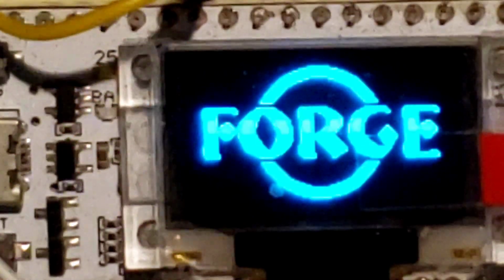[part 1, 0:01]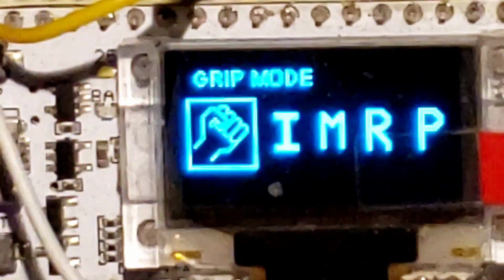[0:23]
Hi, so I thought I'd give you an idea of how my GUI is set up for my prosthetic hand project. So this is the main home screen. And then say if you wanted to go into the grip mode, to where you'd have individual control of which fingers are locked or unlocked, then you hit the menu button that puts you in grip mode.
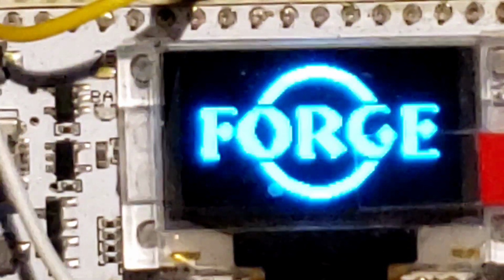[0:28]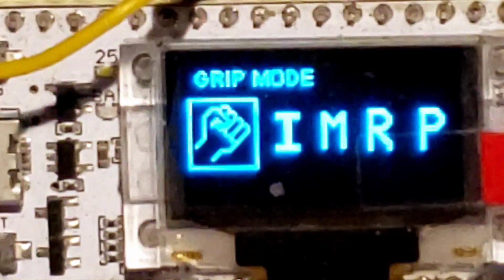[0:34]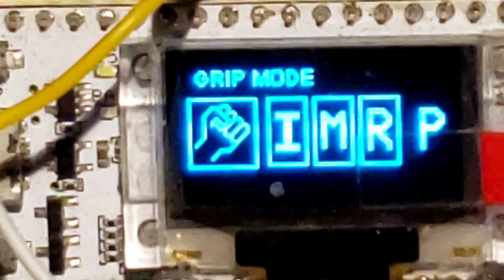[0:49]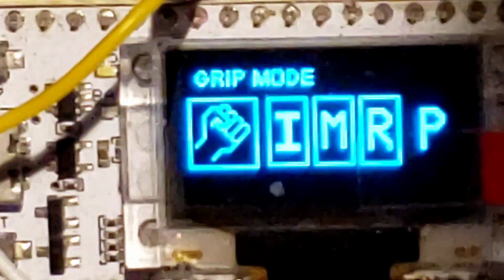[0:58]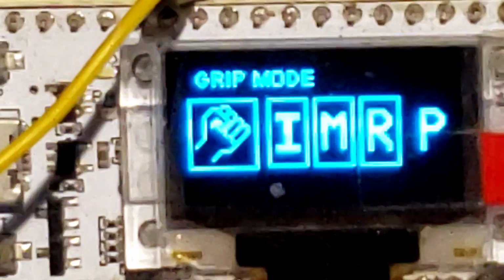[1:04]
Let's go back to grip mode. And then with each one of the myoamplifiers, you would either lock or unlock the index, middle, ring, and then the palm. Anytime one of them is activated, signal high, then it would be the inverse graphic. So, say for instance, the icon would be black, but the background would be white to show that it was in active mode. And then from there, we go to accessories.
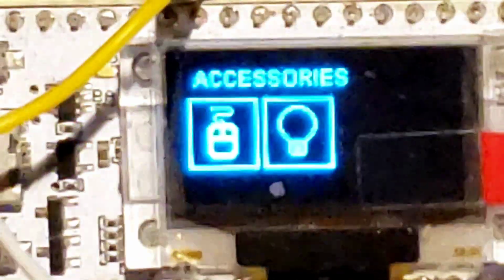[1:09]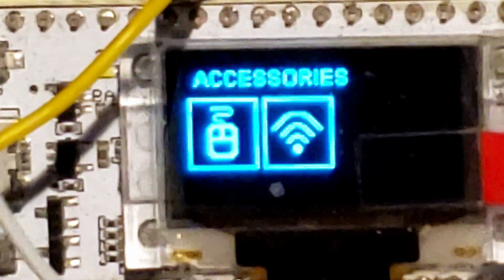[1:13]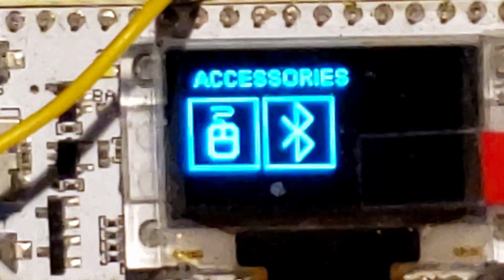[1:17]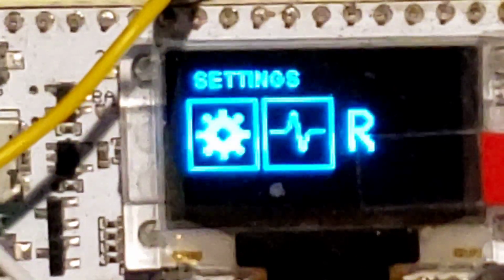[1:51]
So right now this is showing the flashlight, and then that'd be for your Wi-Fi, and then Bluetooth. Because I've come up with a smart relay switch, you'd be able to plug in a grinder or some other hand tool, to where you'd lock the hand down into a grip position, to where you really have a hold of the thing. And then by giving a closed input with the myoamplifier that's on the palm side on the pinky, like you would be grasping something, then it would turn the device on. And when you no longer give it that input, then it would turn off.
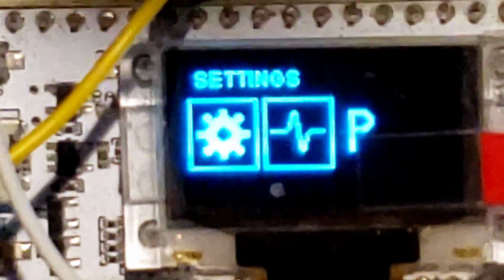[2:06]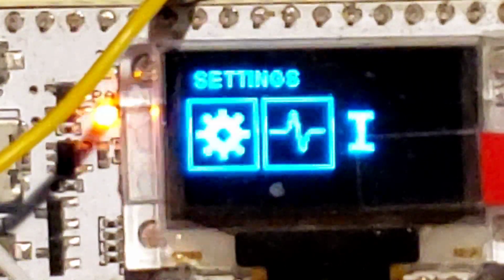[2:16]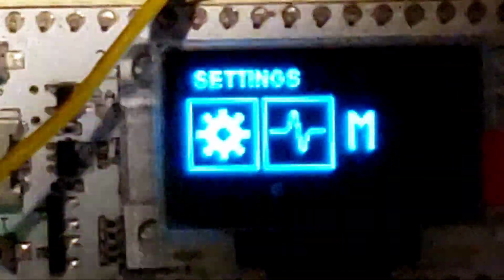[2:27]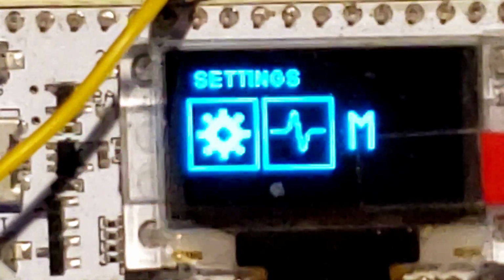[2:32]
So on the settings mode, which is the next mode, you can adjust the threshold on the Myo. This is the Myo interface, and so you can adjust each one of the thresholds without having to hook it up to a computer. Say it's a day that maybe you're sweating more, so you have a higher conductivity, and the device is giving you a lot of false positives. Then you can just go into this settings mode and set a higher threshold to where it isn't giving these false positives.
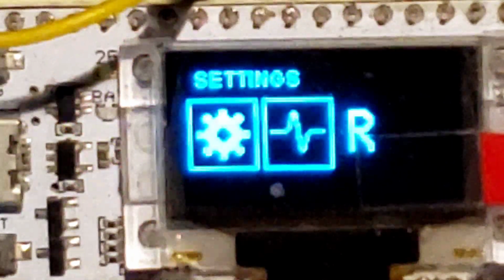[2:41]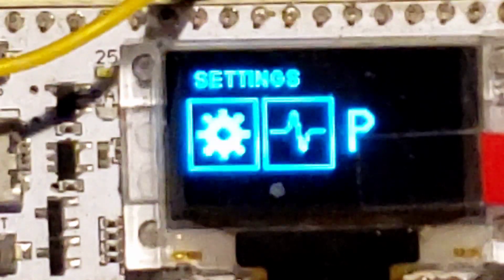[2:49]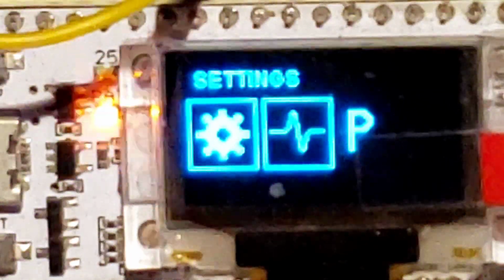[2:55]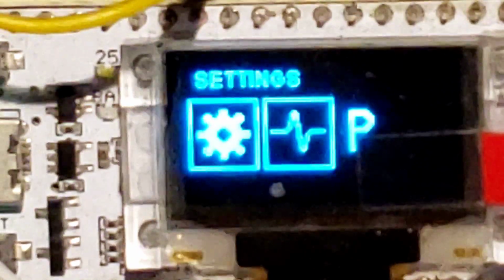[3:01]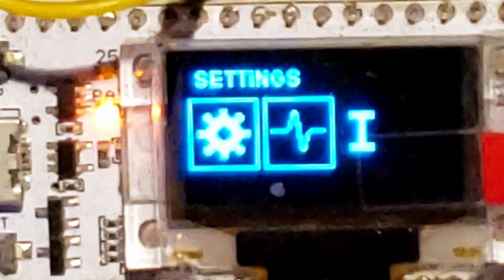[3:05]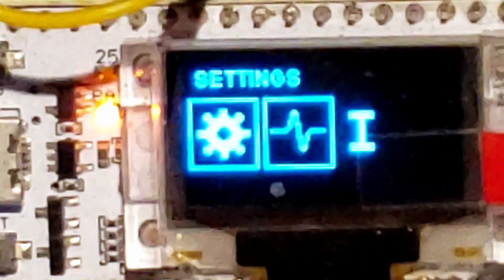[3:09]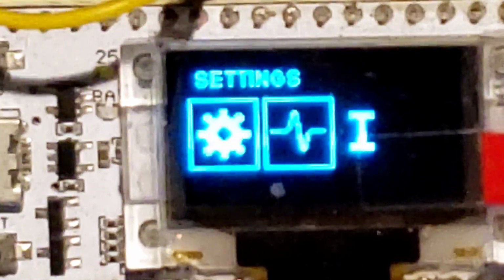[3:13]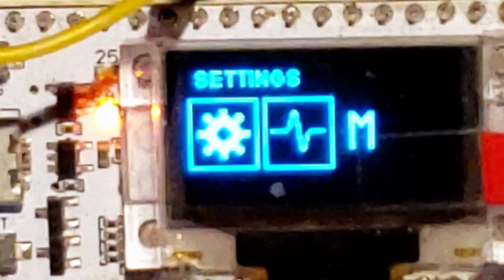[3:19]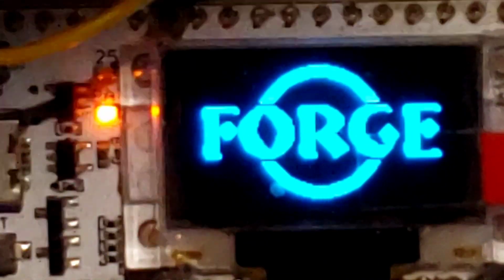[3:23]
And then the same thing for Bluetooth and Wi-Fi on this settings page, but that's where I would be using the gyro. Say if you roll your wrist down, then it would go a page down, which would be for like Bluetooth or the flashlight or Wi-Fi, and then page up would be the opposite roll, a roll to the left as opposed to a roll to the right. Roll towards you would be page up, and then roll away from you would be page down. And then from there, it just goes back to the home page. So, this is how I have it set up in the ESP32.
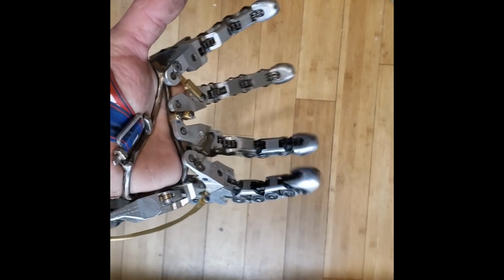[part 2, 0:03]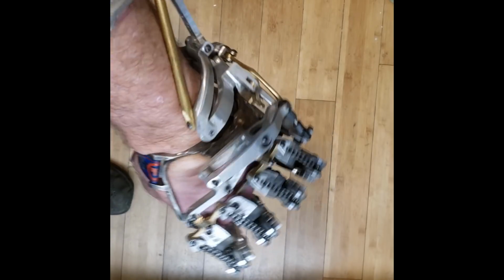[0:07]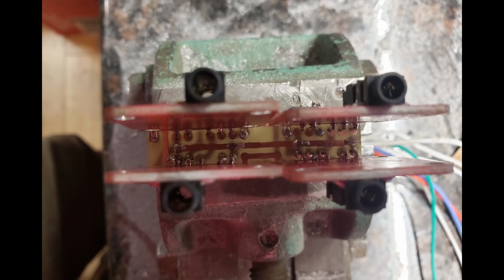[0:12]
The last short video showcased the addition of the splay function to my mechanical hand. In this video, I'll be showing how I made a daughter board to combine the inputs of four of these EMG boards into one easily wired and mounted assembly.
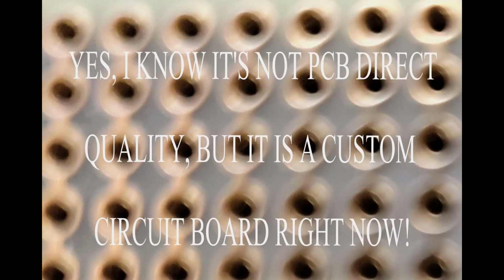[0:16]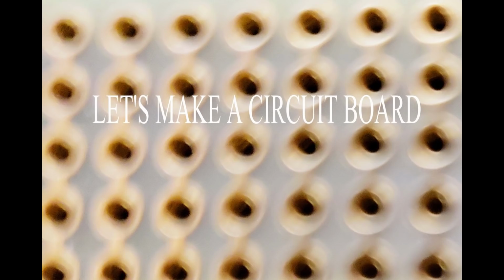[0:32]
Now yes, I know I could upload Eagle files to PCB Direct, wait a couple weeks, and receive multi-layer boards from them in the mail, but sometimes I want or need a board now. When that happens, I break out these techniques, and in a couple hours, I have a custom board ready to assemble. So let's build a circuit board.
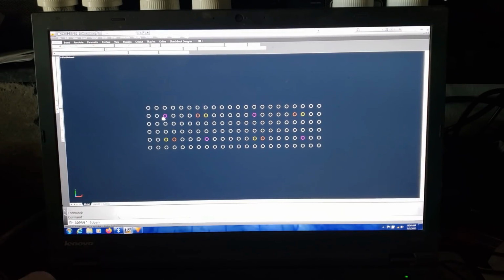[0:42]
Like so many other projects, I'll be starting this in AutoCAD with a 0.1 by 0.1 grid and laying out all the pins of the boards that I want to mount. Now I combine all of the common pins that I can, the voltage positive, the voltage negative, the voltage ground, and all of the signal grounds. The four signal output pins are broken out to solder pads.
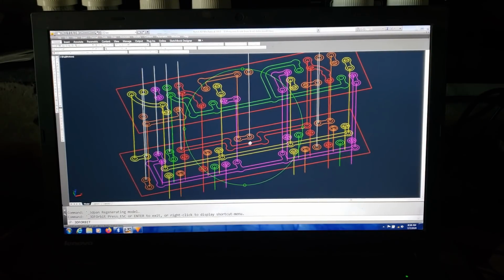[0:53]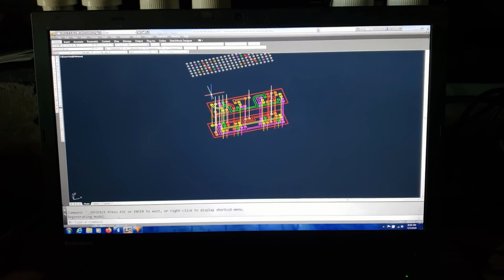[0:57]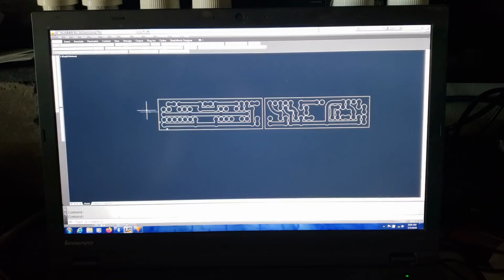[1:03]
Now that the rough layout is done, I break it into two layers with jumper points to get from one side of the board to the other. After the design for the traces is finalized, I offset everything for the kerf of the laser and get it ready for cutting. I'll be using a Cam 5 6040 100-watt CO2 laser for this portion of the project.
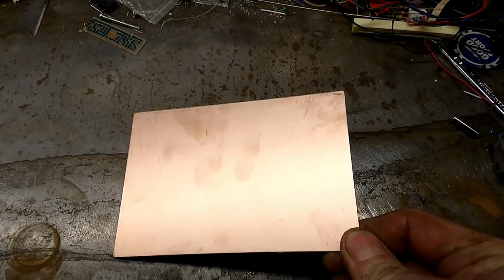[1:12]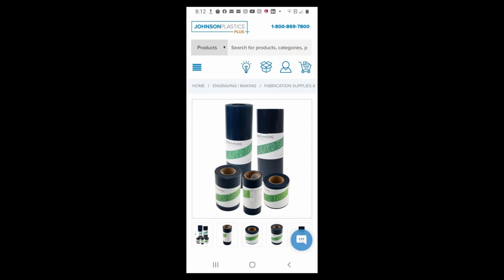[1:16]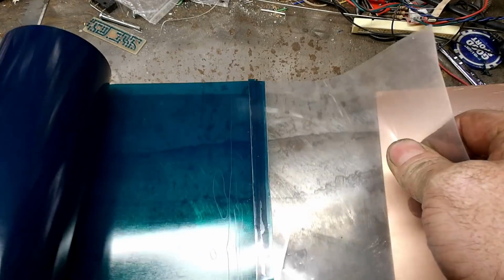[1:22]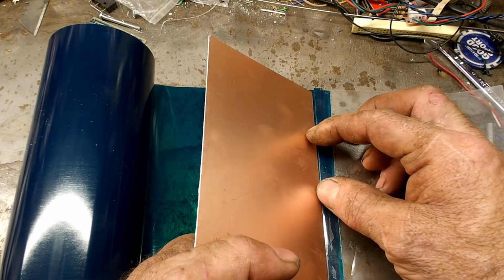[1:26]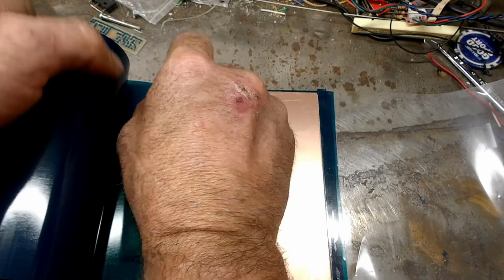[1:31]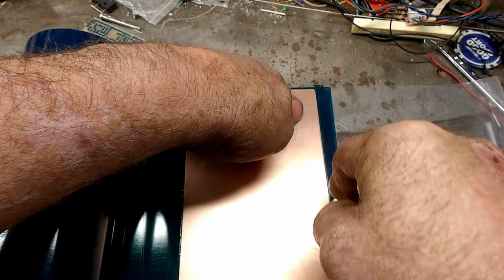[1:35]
Next, I'll prep the raw circuit board material and give it a good cleaning with isopropyl alcohol. I apply the laser masking film that I get from Johnson Plastics. No affiliation or sponsorship, just a place that stocks this product. Now roll out enough film to cover one side of the board and lay the board down on it. Next, run a razor along the edges of the board to trim the film to size. It'll stick really good, so be warned, it's a one-time deal.
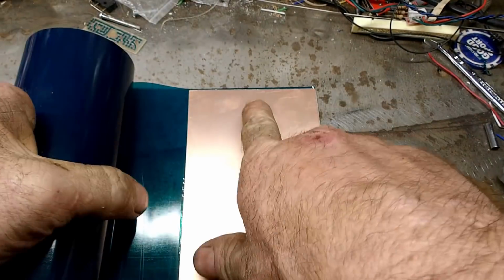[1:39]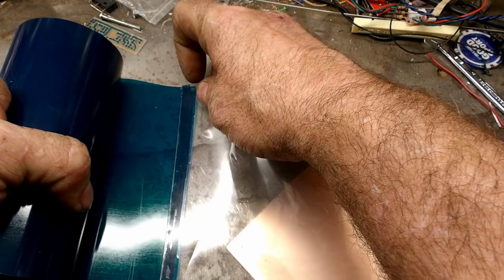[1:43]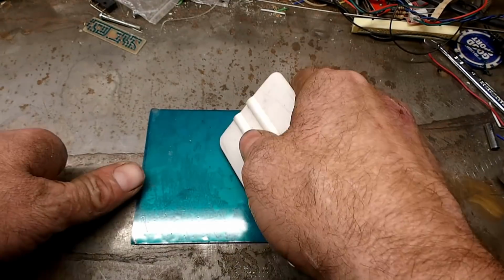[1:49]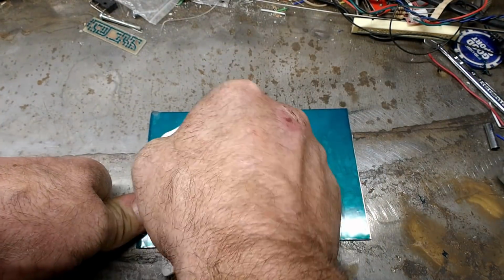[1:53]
Pro tip, there are two layers of the film, the top protective layer and the film itself. I saved the protective layer from another cut. Now I stick it to the inside of the rest of the film so you have a tail to start with the next time. Now use a squeegee to get all of the air bubbles out and really adhere the film to the board. Rinse and repeat for the other side.
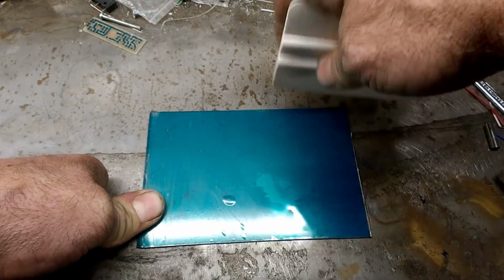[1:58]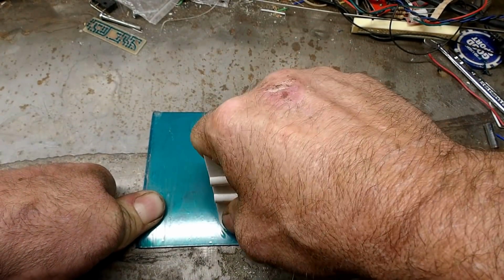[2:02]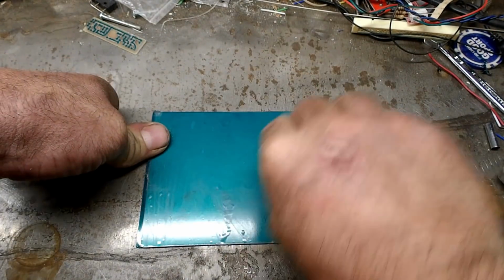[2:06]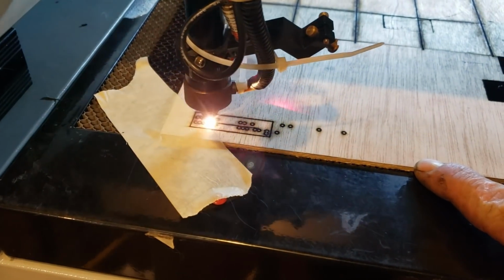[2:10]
Another tip that I found that can improve your success when working with this film is to put the prepared board in the freezer for about 2 minutes. Not really any longer than that, or the film can crack. Now while I'm waiting for the board in the freezer, I'll go and set up the laser reference.
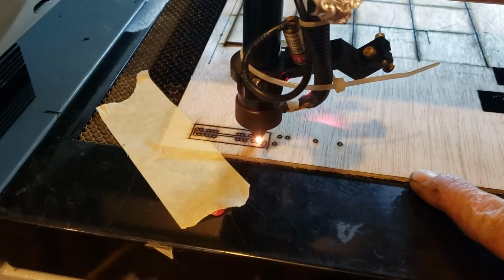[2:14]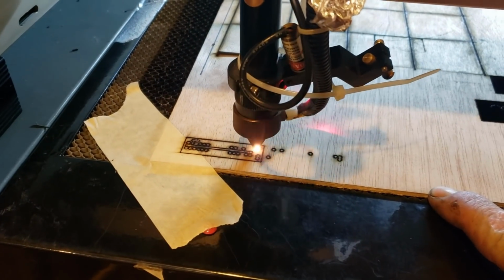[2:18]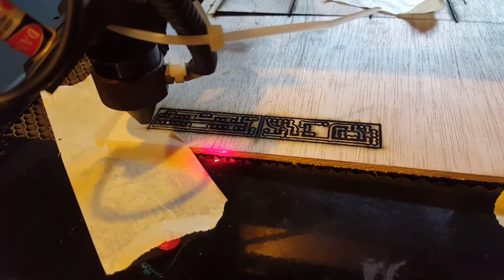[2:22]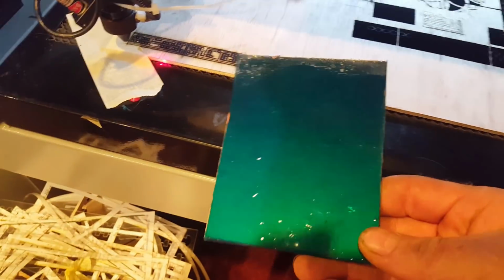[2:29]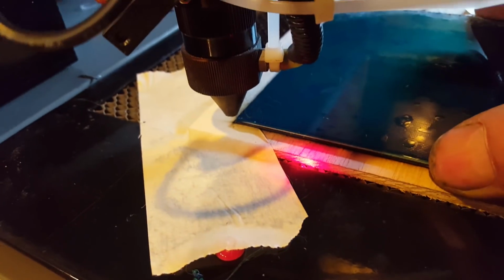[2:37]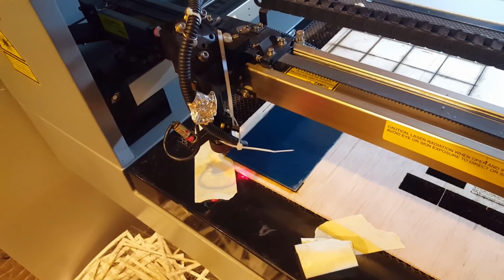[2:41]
I cut the same vector file as for the circuit boards on some plywood that I have taped down on the laser bed. This will provide a square index to align the circuit board to. This is especially useful when making two-sided boards or boards with multiple setups. Time to go get the board out of the freezer and remove the protective layer from the side that you're going to cut first. Align the circuit board with the reference marks on the plywood and use some masking tape to secure the circuit board to the plywood.
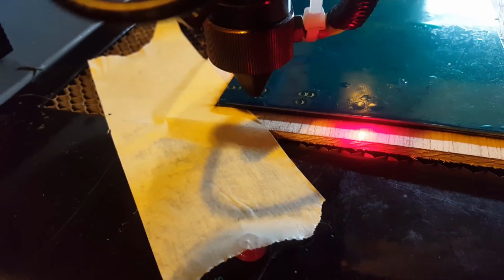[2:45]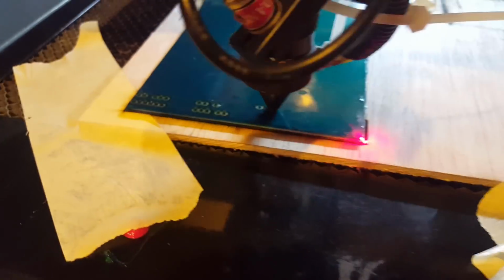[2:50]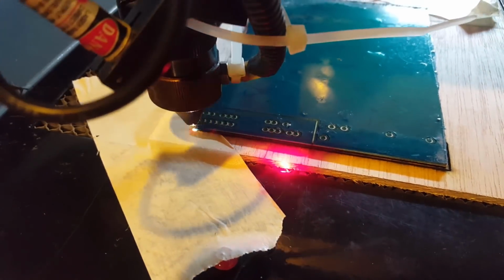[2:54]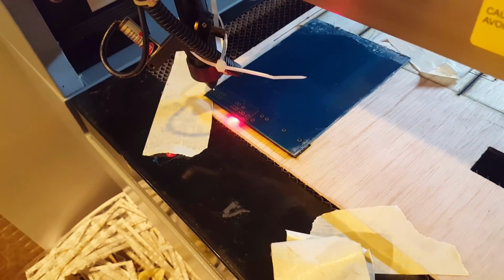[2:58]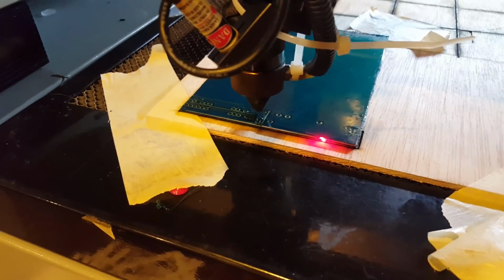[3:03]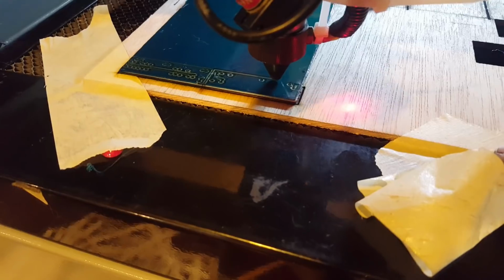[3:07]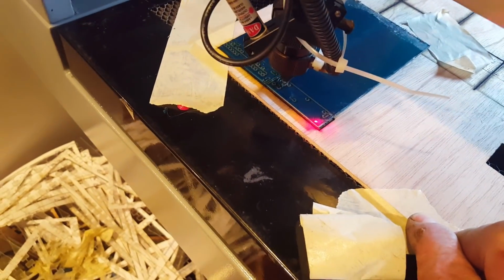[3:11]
It's finally time to press go on the laser. You'll probably have to dink with the settings of your laser to get the same results I do on my machine. I cut circuit board files at 0.3 inches per second and at about 20% power with pretty reliable results. Don't be afraid to go up or down from these numbers to get a cut that the film weeds easily. And repeat as many times as necessary for your situation. I usually cut an extra couple copies while I have everything set up, especially on two-sided boards.
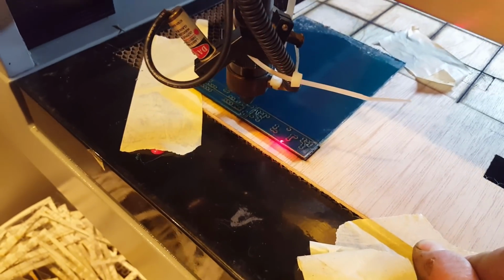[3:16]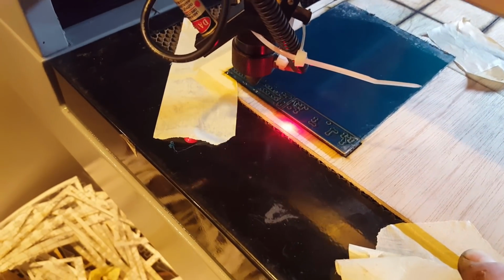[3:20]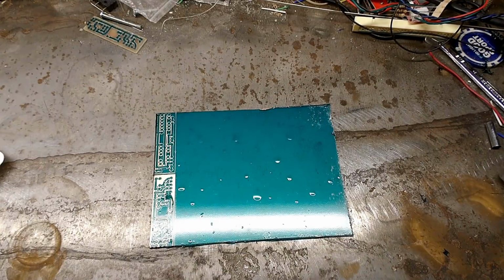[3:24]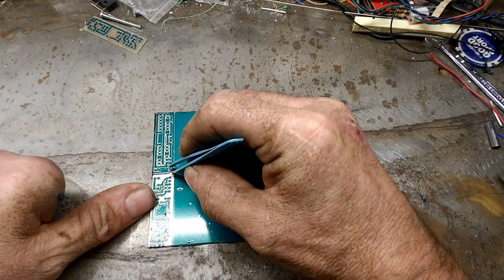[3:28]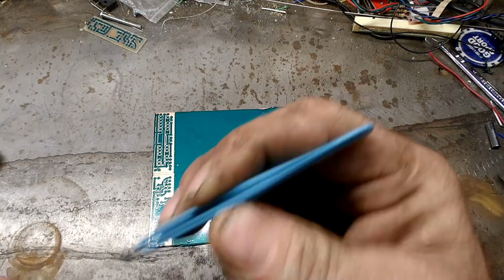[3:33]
There's a lot that can go wrong further down the line, and it's easier to make extras now and not finish them out than to have to go back and catch parts up. So, back in the freezer for a couple minutes, and then we'll start the process of weeding the board. Weeding is tedious, so take your time and really do a thorough job. The better job you do here, the better your boards will turn out.
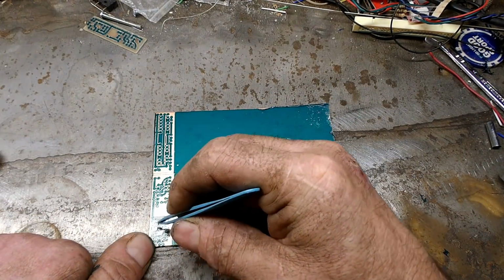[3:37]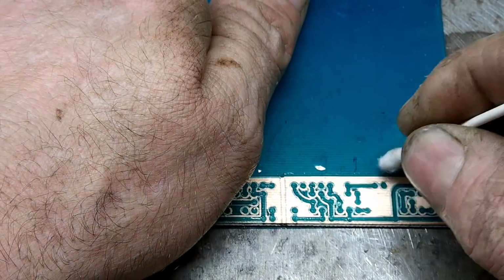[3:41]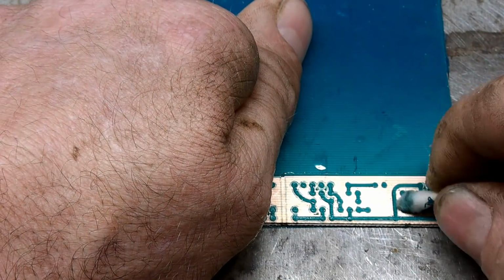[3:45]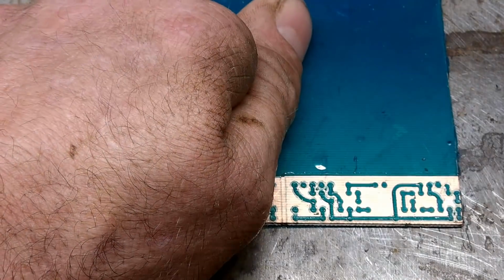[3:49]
After you get all the big pieces gone, and you're just left with the burnt film residue, go ahead and switch to a Q-tip with isopropyl alcohol and clean off what's left from the laser cut. Be sure not to skip over this step as it really affects the end results.
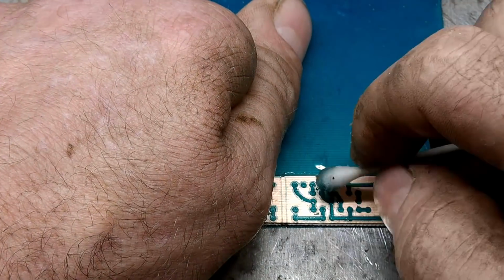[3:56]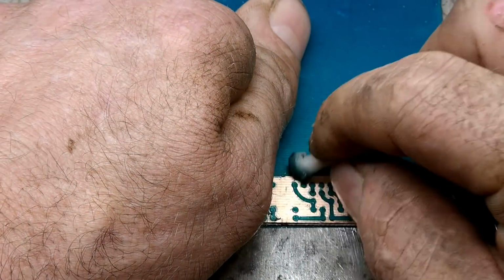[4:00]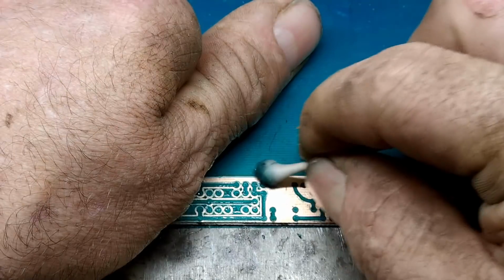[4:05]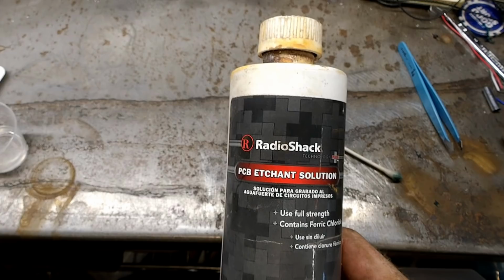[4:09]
After you have the boards weeded, go ahead and make sure everything looks as it should. Make sure that the patterns on the top and the bottom of the boards line up. If everything looks good, go ahead and rough cut the boards to size with a saw and lightly sand the edges. To separate the traces, I use ferric chloride from Radio Shack.
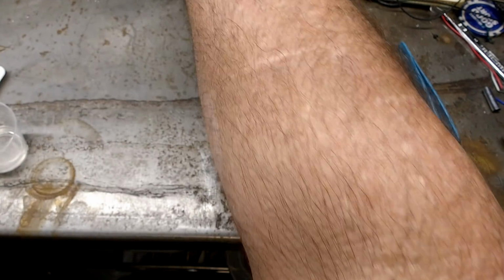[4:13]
Again, no sponsorship or affiliation, just a store that carries the product. Now use the level of PPE that you feel comfortable with. I'm not your mom, nor are you mine, so proceed at your own risk. But gloves and glasses should probably be worn when working with this chemical.
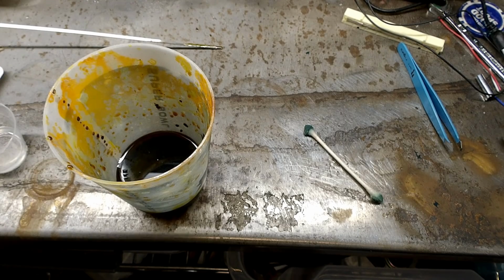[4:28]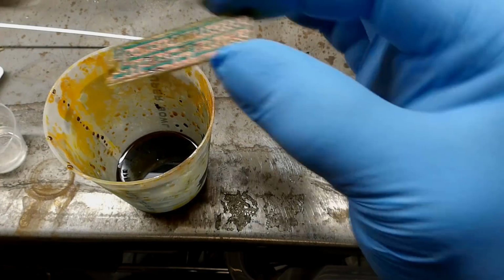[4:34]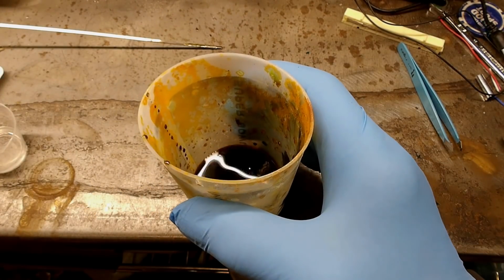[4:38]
Now pour enough to cover the boards in a plastic cup or Tupperware that you don't mind never using for food again. Everything being ready, go ahead and stick the boards in the ferric chloride. This will erode away any of the copper film that isn't protected by the masking. Be sure to pull the board out every so often and check on it.
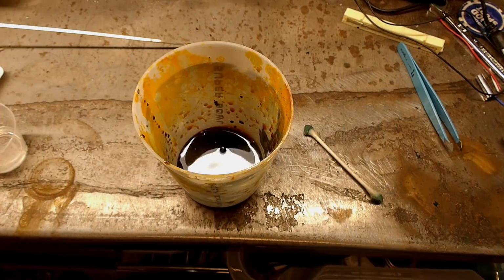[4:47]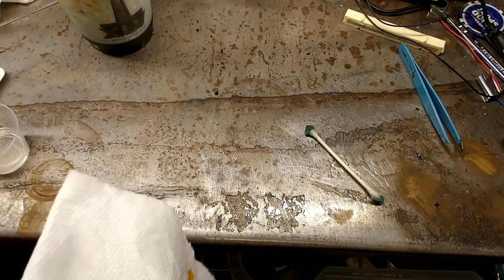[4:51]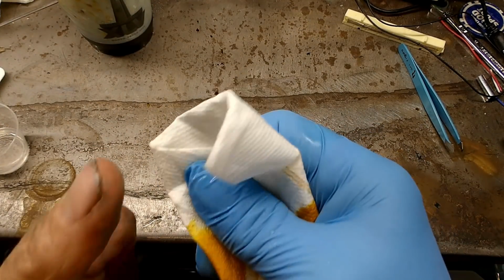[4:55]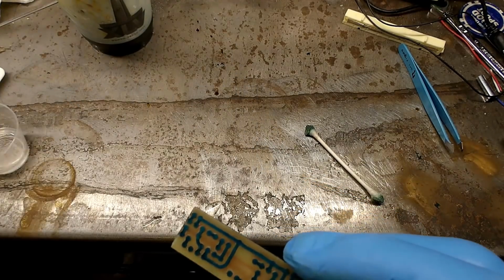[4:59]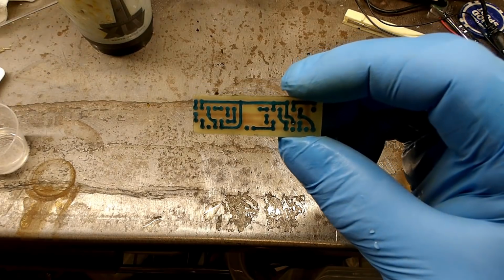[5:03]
When it looks to be suitably cooked, go ahead and pull it out and rinse it off in clean water and baking soda to neutralize the acid. Blot it dry with a paper towel, and if you still have traces connected, put it back in the acid. If everything looks separated, you're pretty well done. Just rub off the masking and scrub it lightly with fine steel wool.
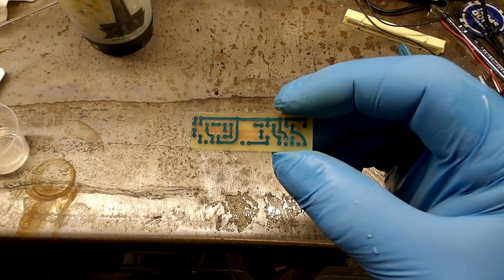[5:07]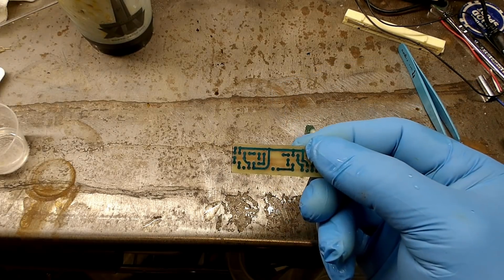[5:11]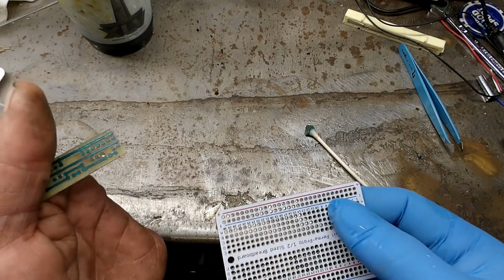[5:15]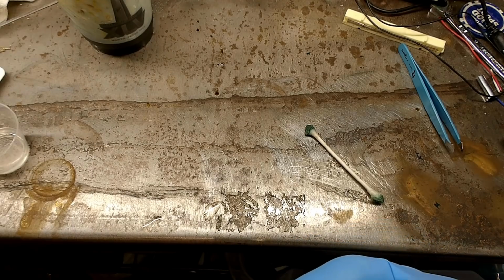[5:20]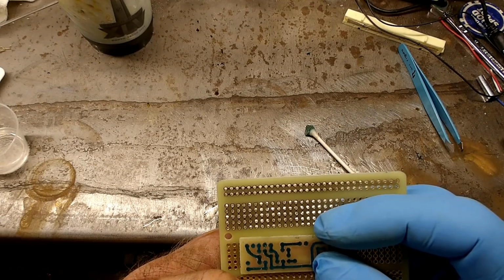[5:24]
Now go ahead and hold it up to light to make sure everything lines up top to bottom. If everything is good, go ahead and check the traces and make sure all the traces are isolated. Once you're sure that everything is electrically isolated and you're positive it's not going back into the acid, go ahead and continue on to the next step of drilling the holes in the new board.
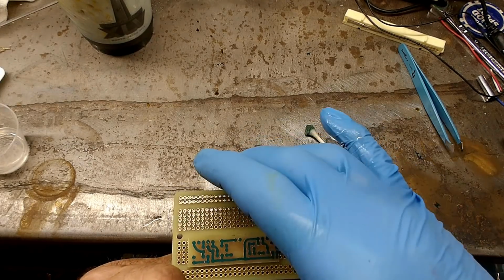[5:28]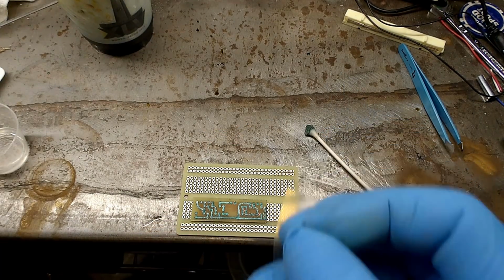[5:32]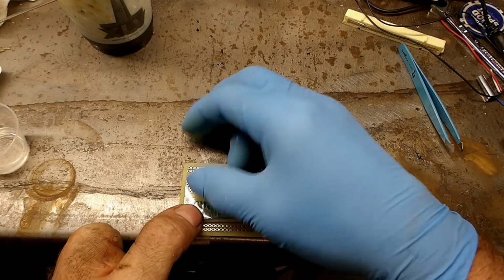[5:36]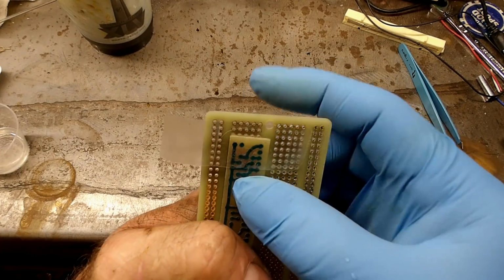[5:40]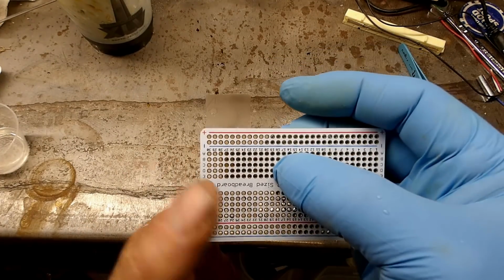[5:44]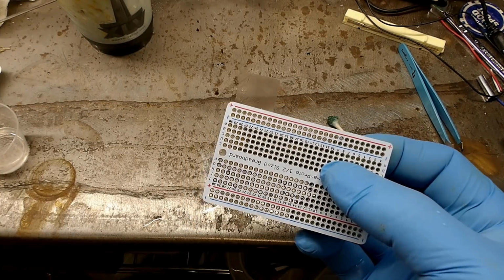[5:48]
To do this, I use a protoboard as a drill guide and tape the custom board to the underside, being extra fastidious about making sure that all the holes on the protoboard line up with the hole locations of the custom board. Once the board's lined up, use some scotch tape to secure the one to the other. Double check the placement and make sure nothing is moved. If everything is still good, go ahead and grab the micro drills.
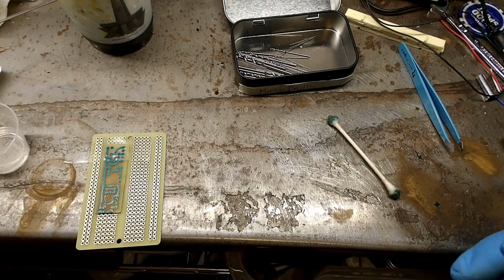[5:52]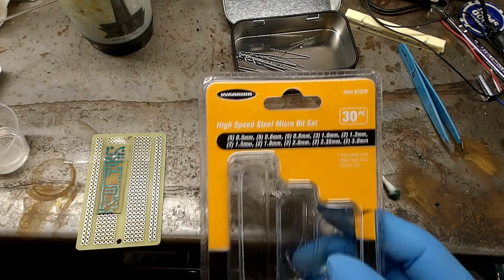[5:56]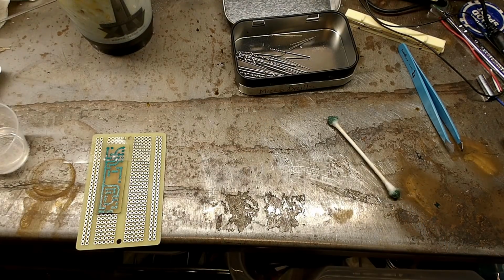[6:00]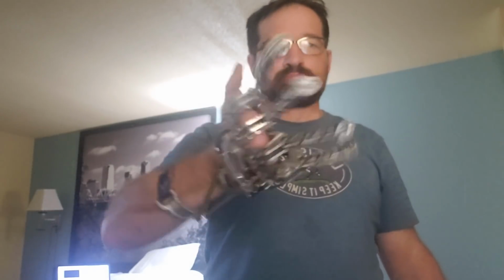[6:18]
I hope this information comes in handy to you and you're able to use it on one of your projects in the future. Good luck with whatever project you're currently working on, and I'll update you when I have more done on my hand project.
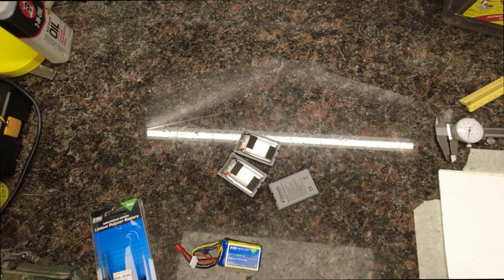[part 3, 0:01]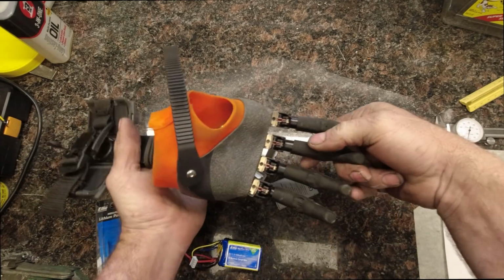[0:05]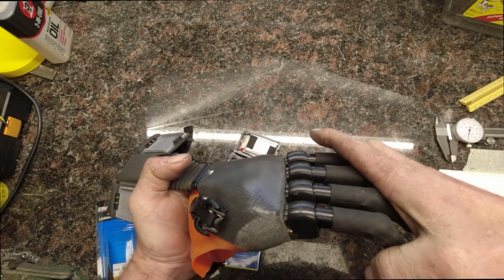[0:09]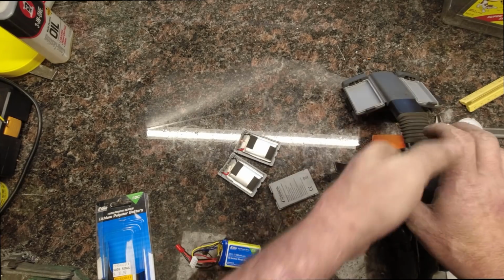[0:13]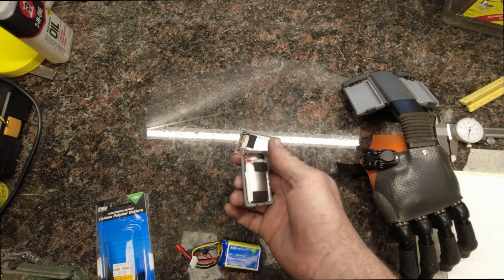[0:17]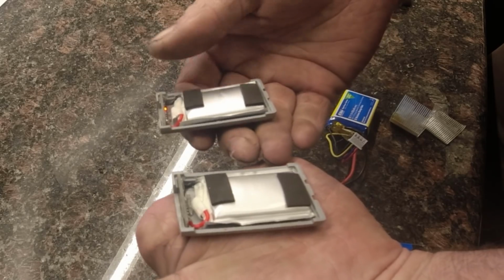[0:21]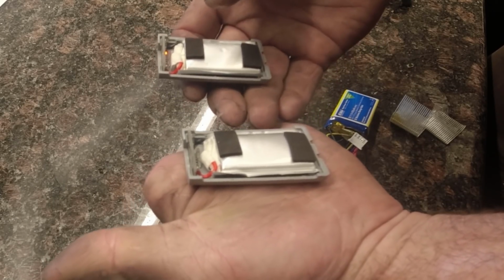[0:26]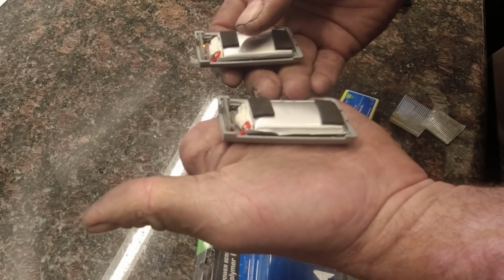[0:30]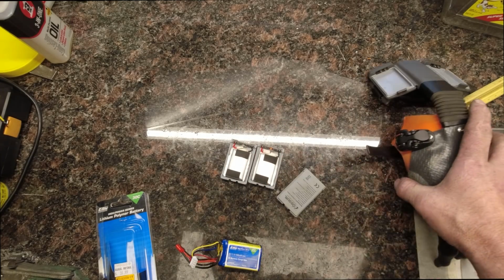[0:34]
I have an Ossur i-Digits hand that I don't use very often, but occasionally I do need to use it. Recently, when I was charging my batteries, the LiPo packs went puffy. When this happens, the cells become compromised, and really you shouldn't use them anymore, because they can catch fire. The battery packs are only warrantied for a year, I found out.
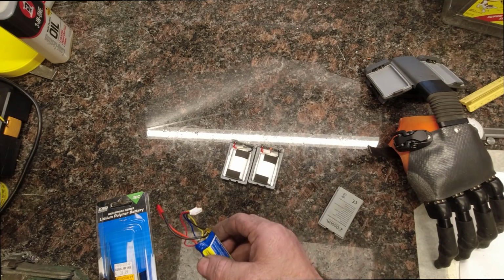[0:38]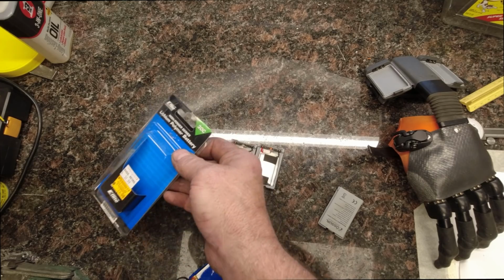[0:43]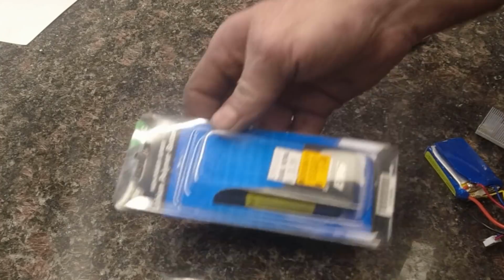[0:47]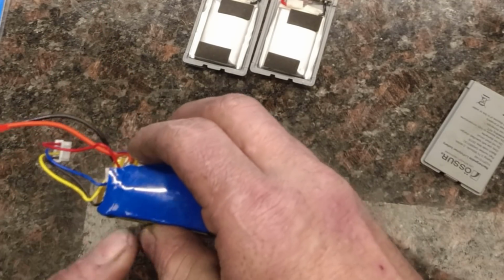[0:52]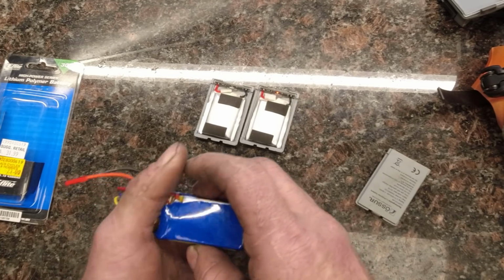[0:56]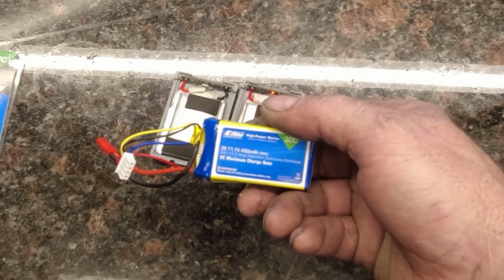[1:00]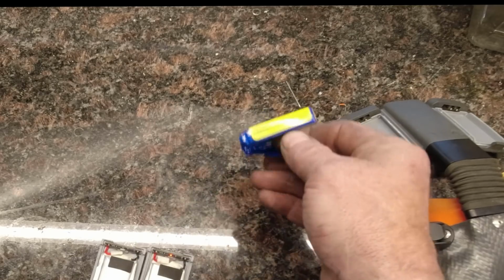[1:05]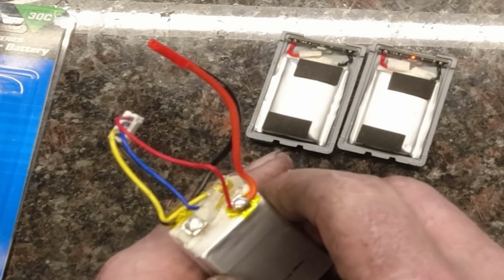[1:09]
So rather than sending them back and incurring a cost, I decided to go to my local hobby shop and get a LiPo pack that has the same type of cell and replace them for essentially $20. What you do is take your regular E-flite LiPo, cut the outer heat shrink off, and that leaves you with three individual cells.
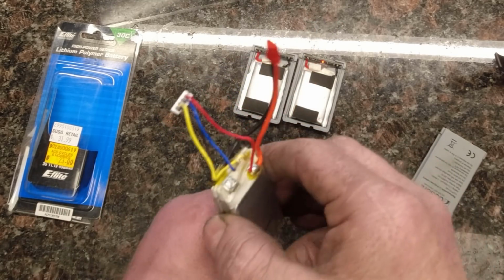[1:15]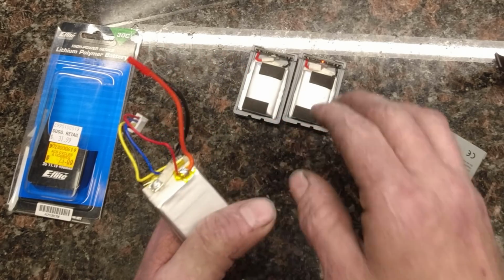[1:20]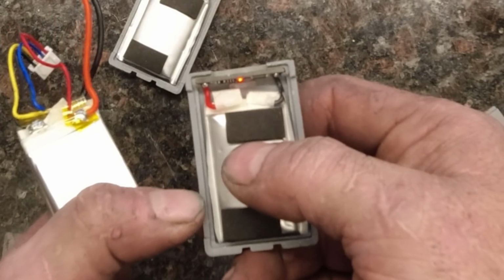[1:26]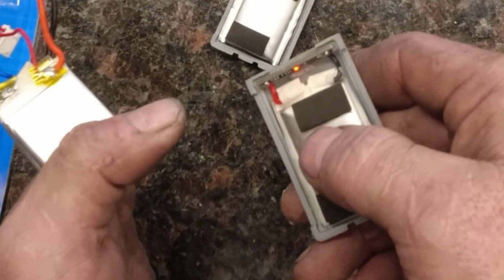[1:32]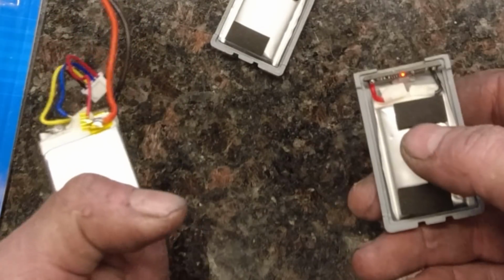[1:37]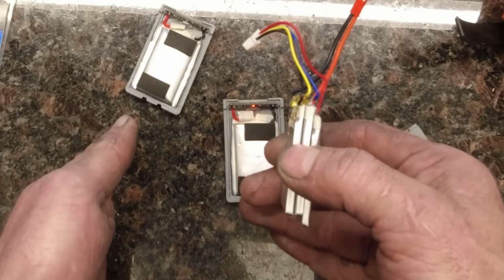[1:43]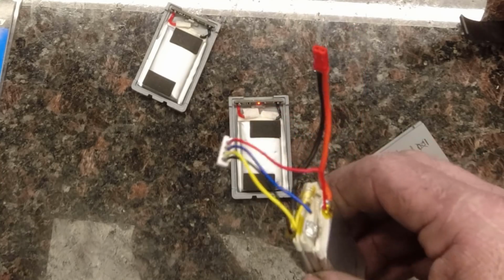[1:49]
From here, you're going to need to isolate the cells. You'll unsolder this one, unsolder that one, and that leaves you with just the terminals. Then you'll solder them onto the contacts in the battery packs themselves, being careful not to touch the contact, because it is still a LiPo battery. You don't want to short them and discharge them. Doing it this way, you'll be able to replace the cells in your battery packs for much less and quicker than sending them in, RMAing them, and getting new cells from Ossur.
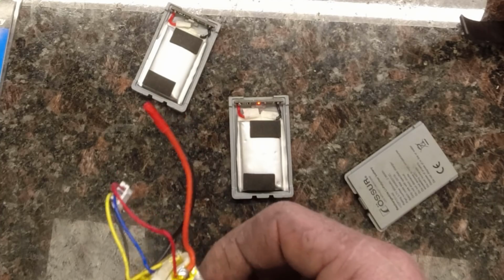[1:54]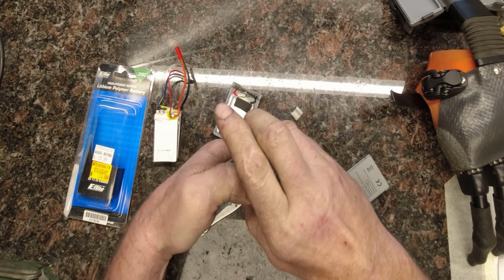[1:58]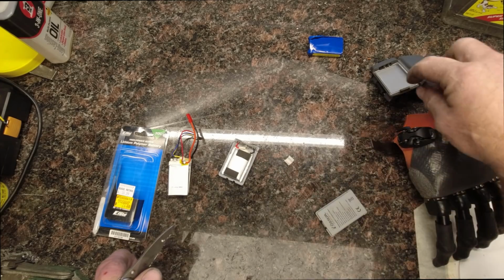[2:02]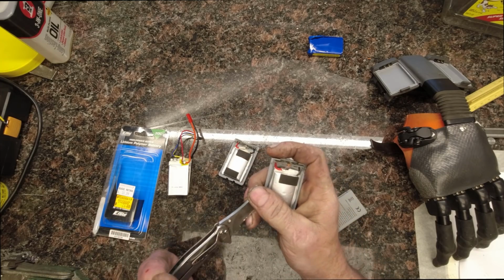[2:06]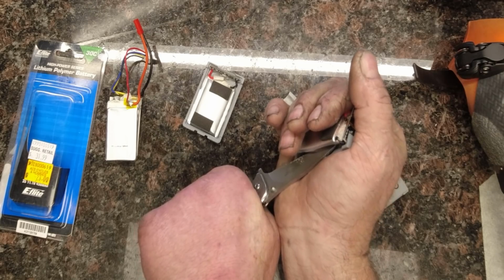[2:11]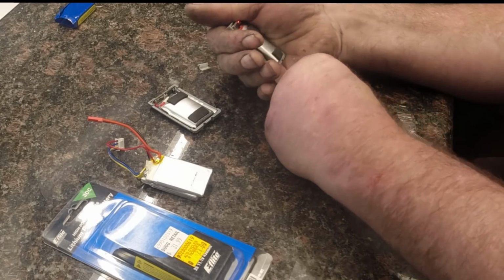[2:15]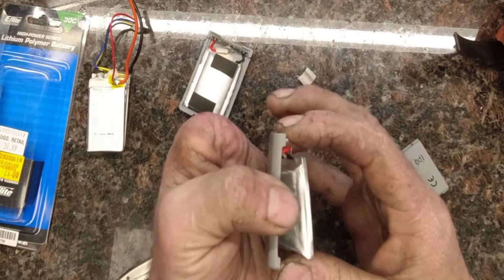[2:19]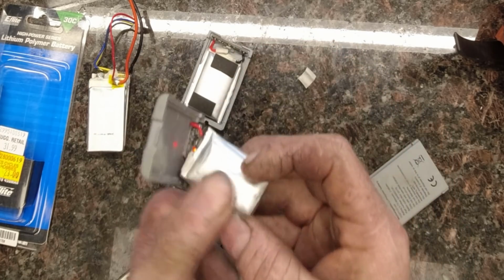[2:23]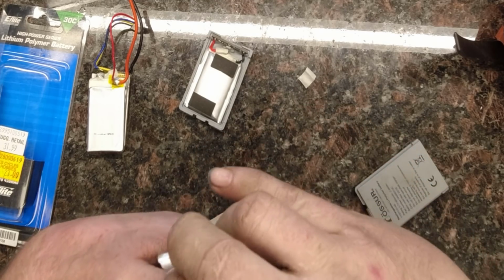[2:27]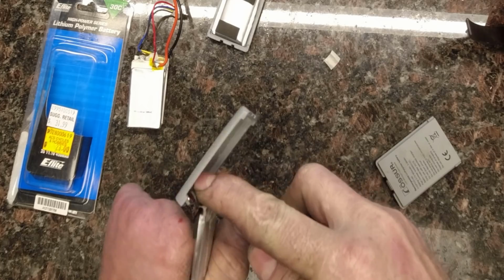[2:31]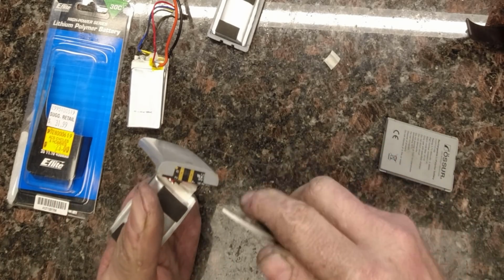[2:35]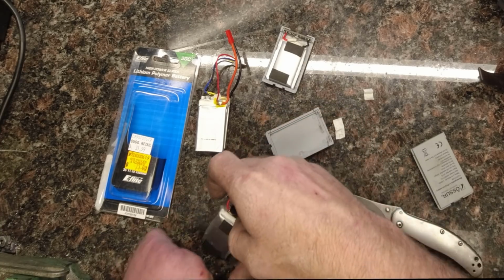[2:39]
So, let's get started. We need to get the cell itself out of the housing. I was really lucky that when this happened, it popped the little backs off, so I didn't have to cut open the housing. Be really careful that you don't actually cut the cell. I haven't done one of these yet. Oh, there we go. They're just held in place with double-sided sticky tape. What we'll do is remove the insulating tape that protects the wiring from getting shorted. Just like that, and that leaves us with two terminals, just like what we have on this new cell.
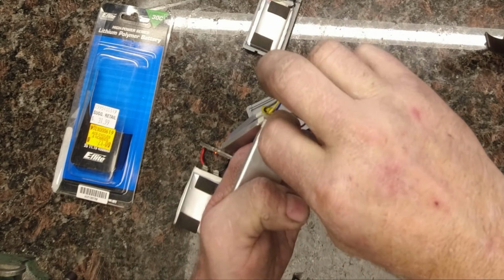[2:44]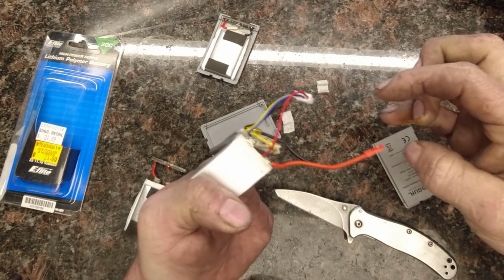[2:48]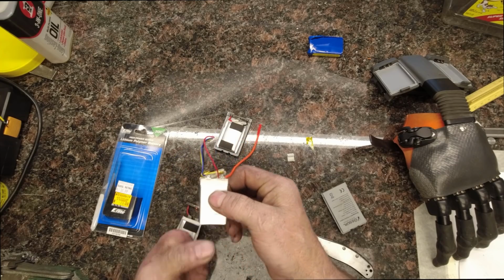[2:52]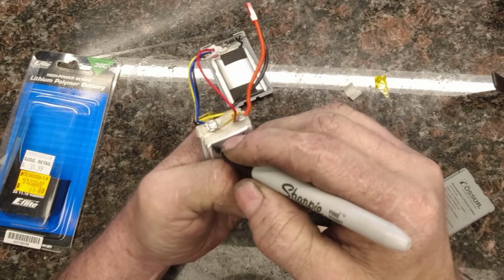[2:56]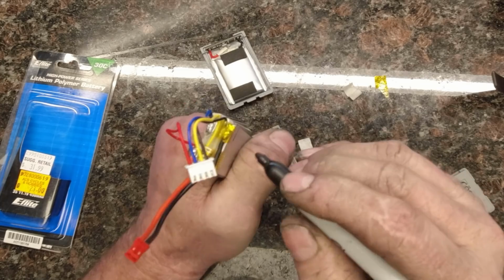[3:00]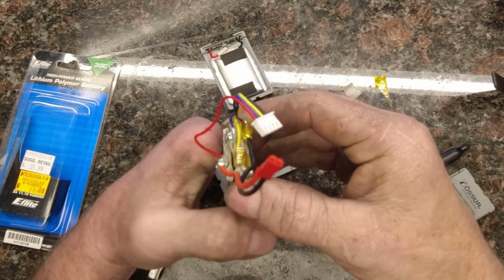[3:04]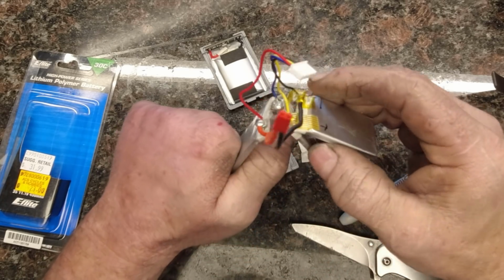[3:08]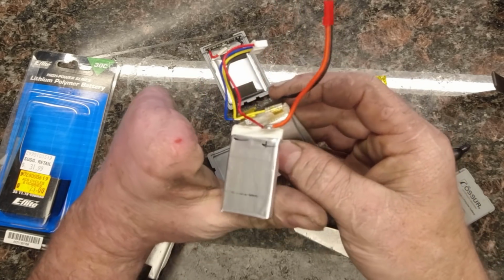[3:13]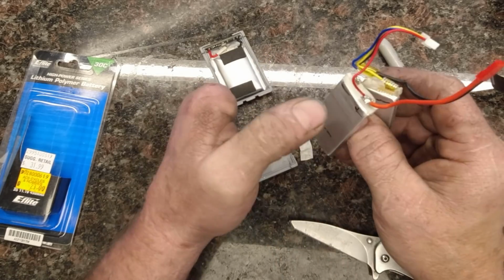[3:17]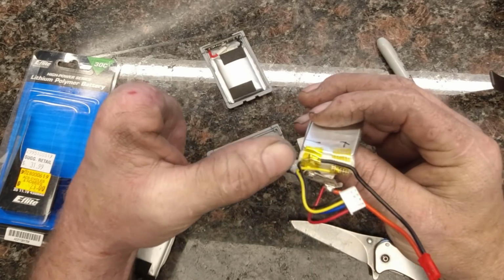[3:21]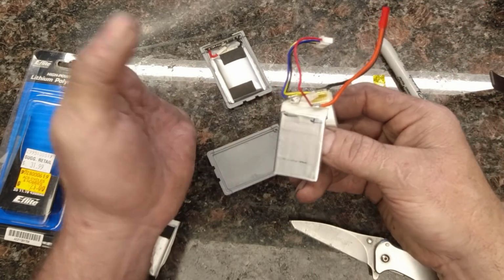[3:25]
Now this yellow stuff is called Kapton tape. Use it to isolate things. Now what I'm going to do real quick is mark positive and negative on these cells so I don't get them mixed up. Positive, negative, negative, positive. Since these are set up in series, this one's going to be positive, and this one's going to be negative. The way that works is you go positive, negative, positive, negative, positive, negative. That'll take your 3.7 volts per cell and boost it up to 11.1.
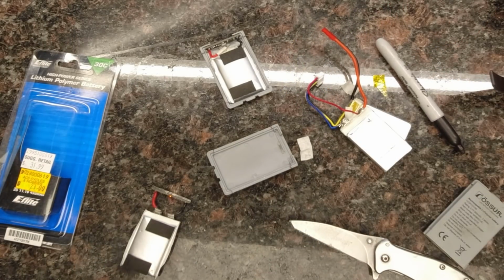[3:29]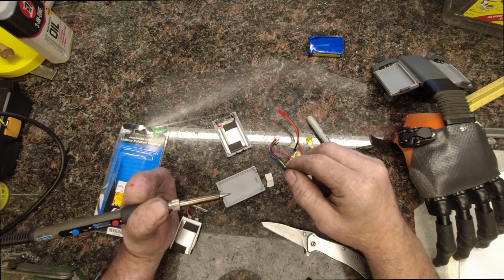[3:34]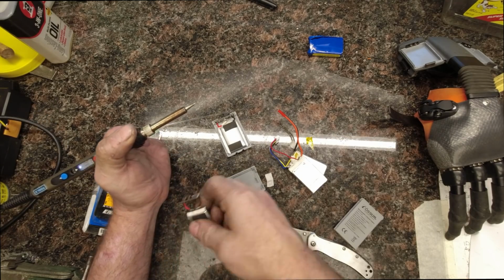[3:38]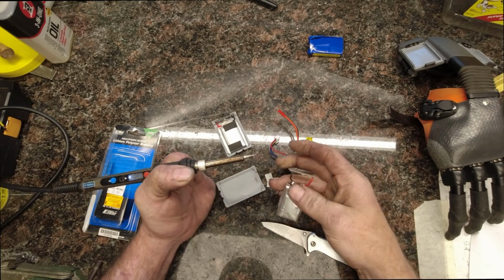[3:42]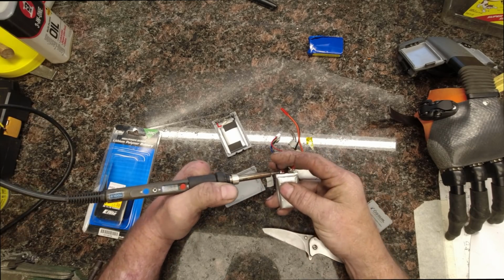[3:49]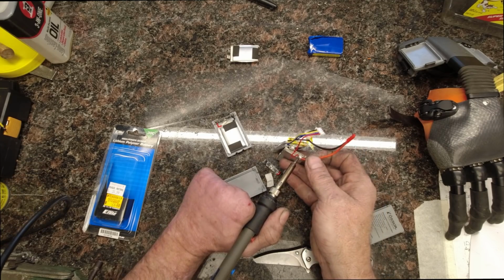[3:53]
So, let's take our soldering iron and wait for it to come up to temperature. Hopefully somebody will be able to use this technique to repair their hands, rather than having to send the battery packs back to Ossur. Or actually, I don't really know if you have to send them back, or if you just have to buy new ones. Then let's unsolder this cell from the pack. These might actually be spot welded rather than soldered. They probably spot welded them together.
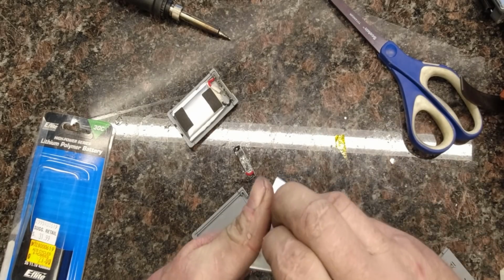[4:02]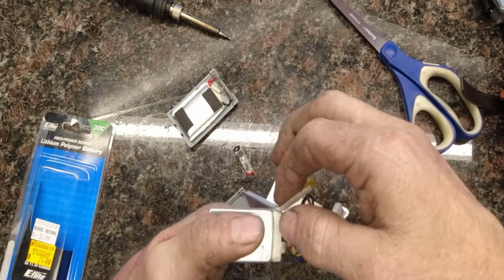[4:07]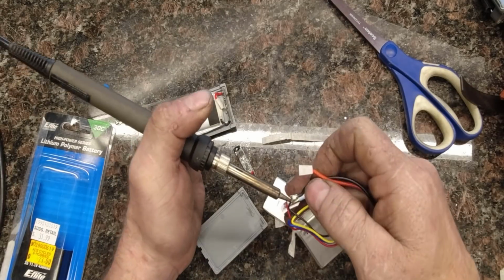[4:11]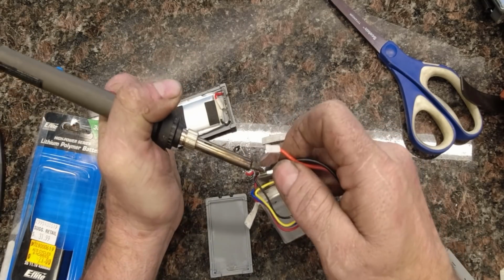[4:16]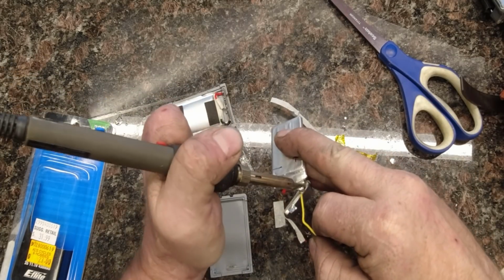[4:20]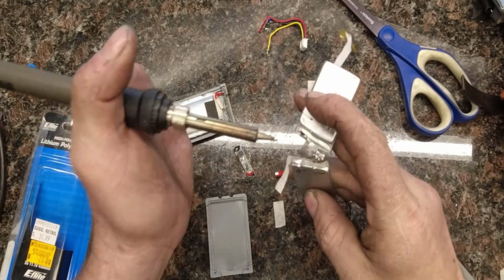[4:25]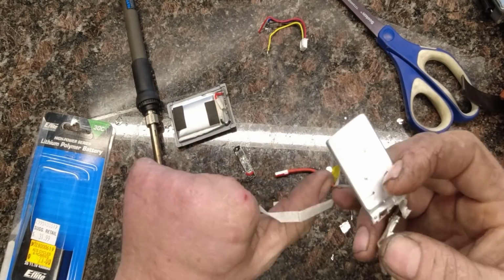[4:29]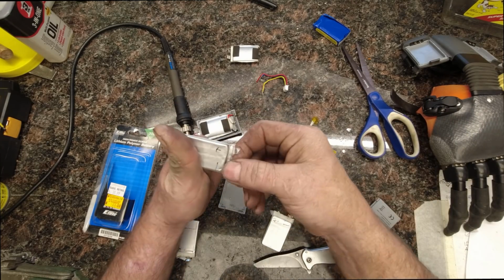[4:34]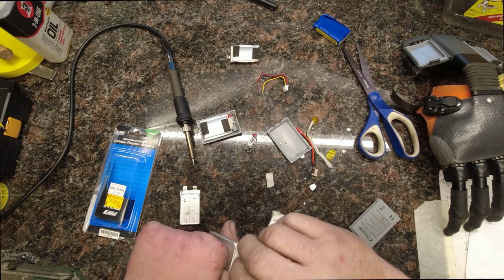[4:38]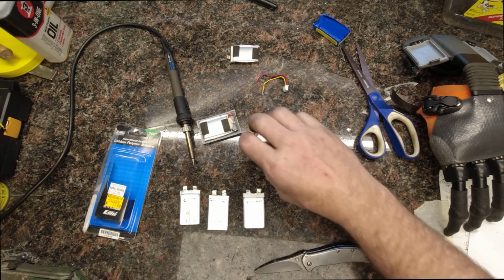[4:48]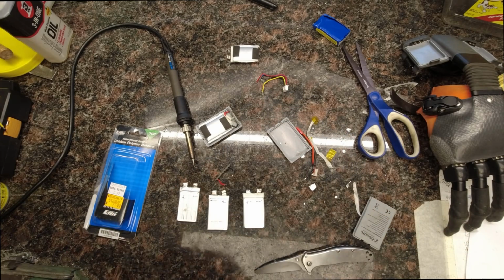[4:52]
So that leaves us with three individual cells. Just like that. Next we just need to attach this circuit board onto the cells, and we'll just solder that on just like you would anything else.
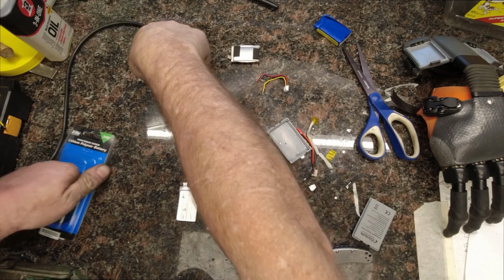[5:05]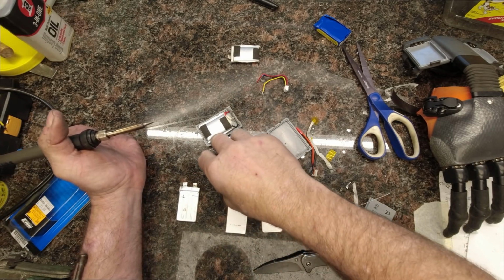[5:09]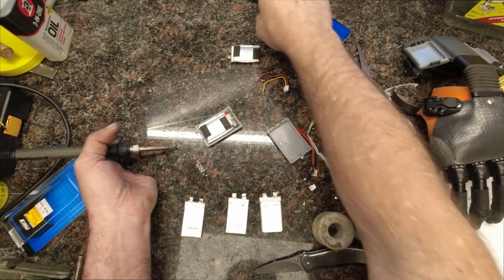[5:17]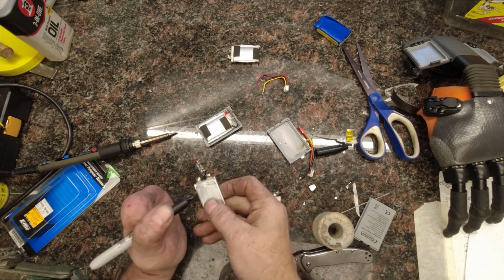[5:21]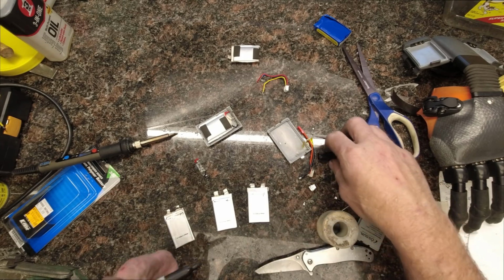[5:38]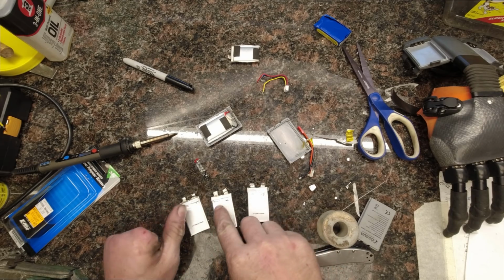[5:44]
So, we have these marked out, positive, negative, positive, negative, positive, negative. This one's negative, which is marked on both sides. So that's positive, and negative. Now, when we look at all these cells, you'll see that each one is the same. On the back where they have the date code, it's negative, positive. And then on the front, just make sure all the polarities are the same.
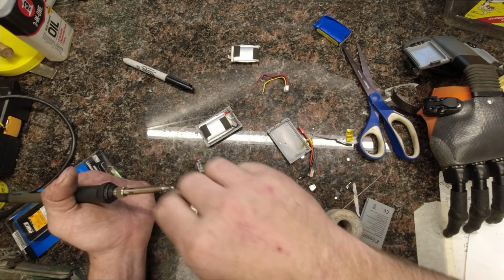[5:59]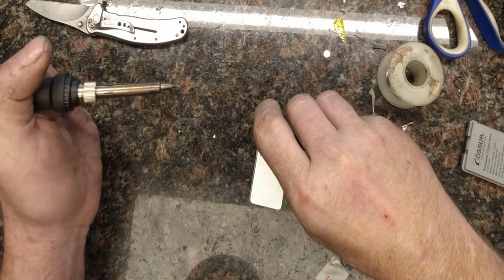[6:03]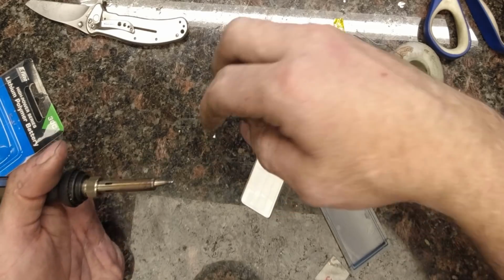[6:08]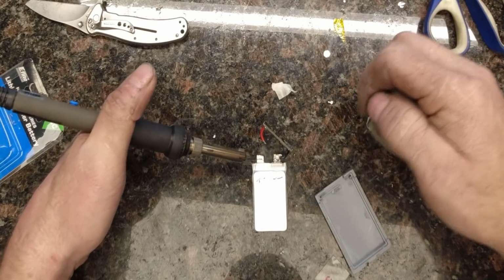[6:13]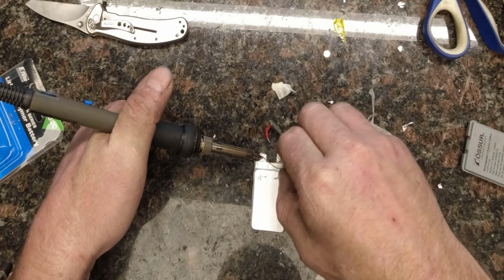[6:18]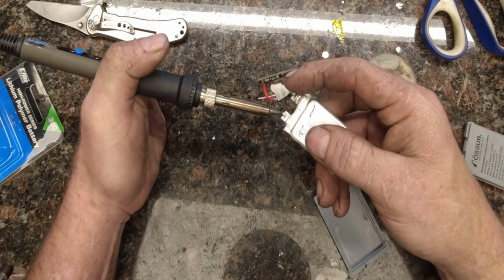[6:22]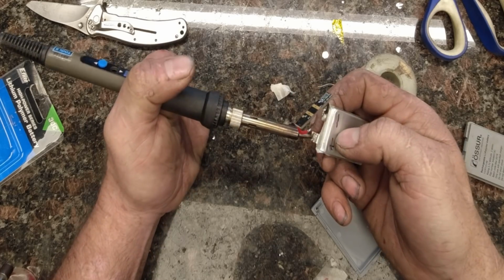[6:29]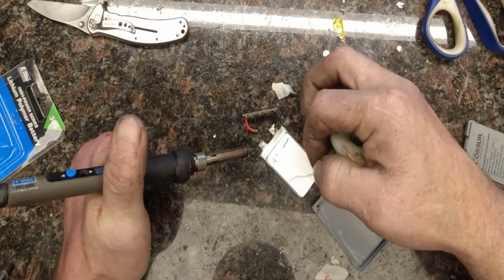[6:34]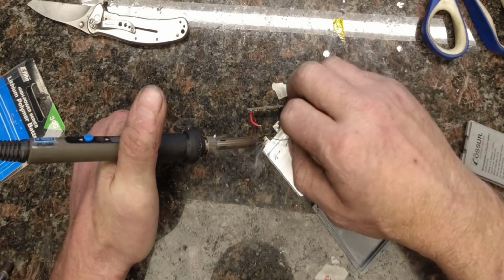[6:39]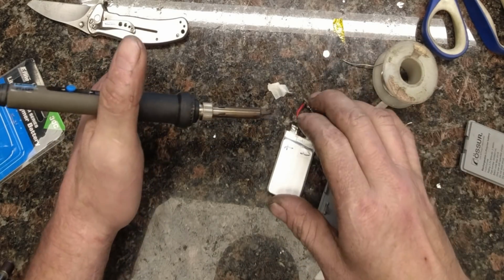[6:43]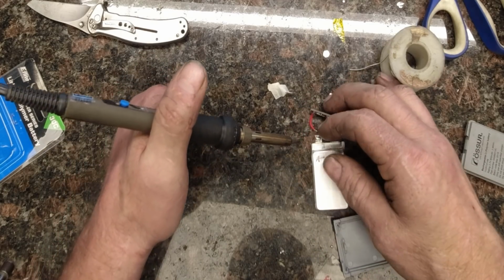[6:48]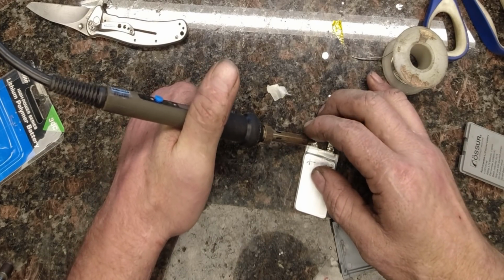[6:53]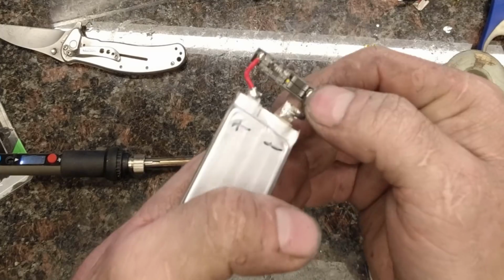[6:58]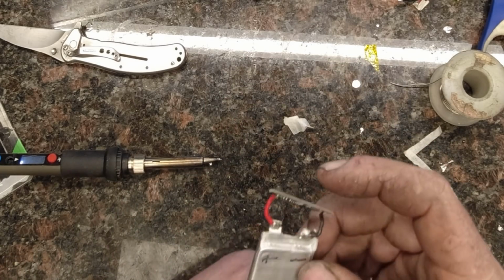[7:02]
Since they already have solder on the one side, I'm going to use that as a starting point. Make sure you get a nice solder joint there. You don't want to have a cold joint. On this one, we're going to need to burn through that layer like we did on the last one. Okay, we're through that. Let's put just a little bit more fresh solder on that, and let's solder that wire on there. There we go. As you can see, the LED is lit up, telling us that we got it right.
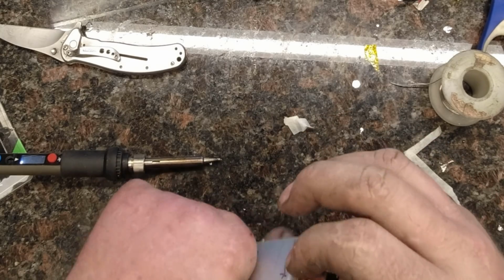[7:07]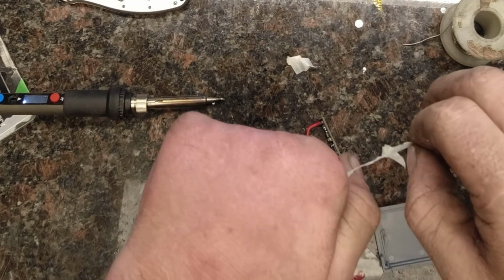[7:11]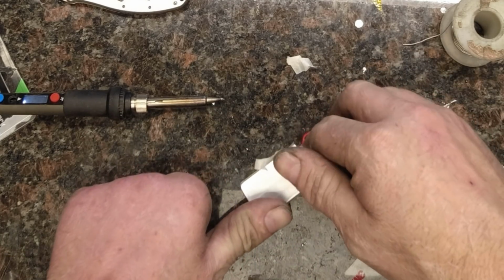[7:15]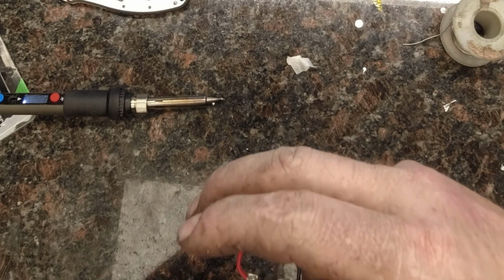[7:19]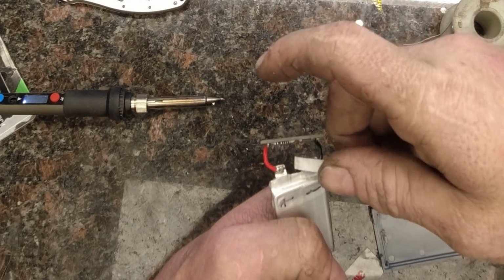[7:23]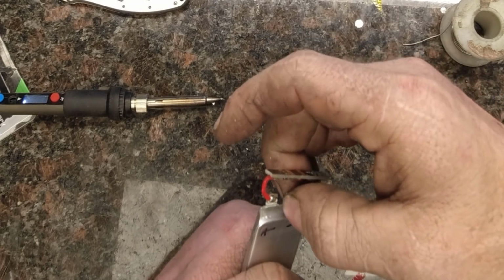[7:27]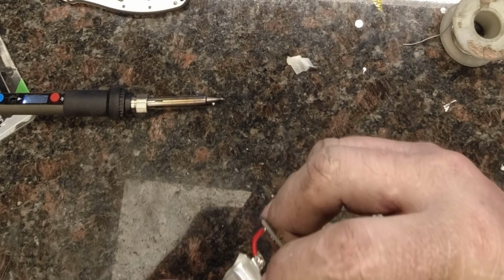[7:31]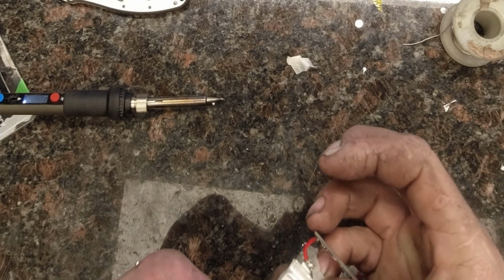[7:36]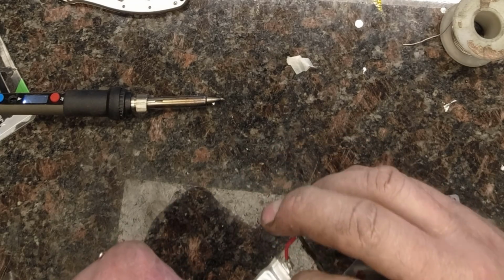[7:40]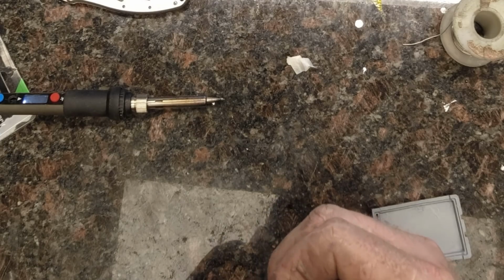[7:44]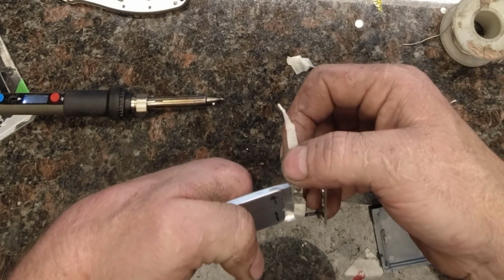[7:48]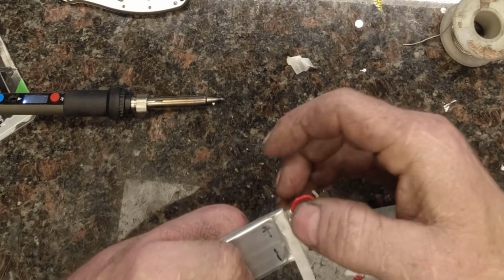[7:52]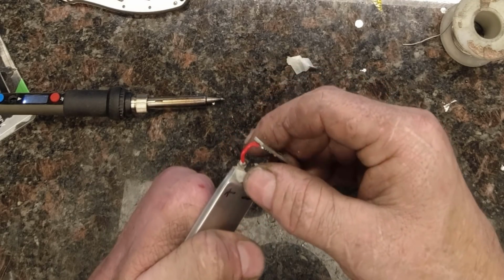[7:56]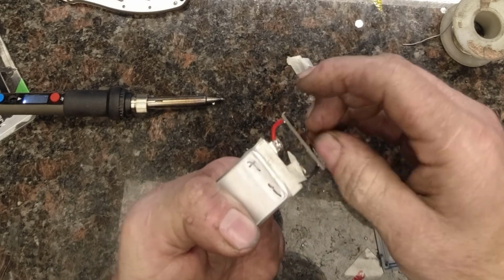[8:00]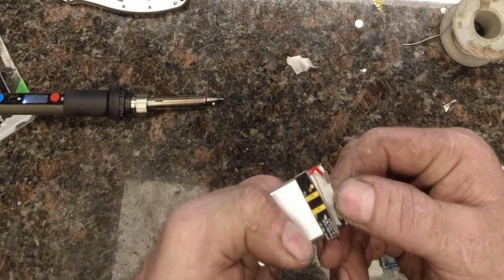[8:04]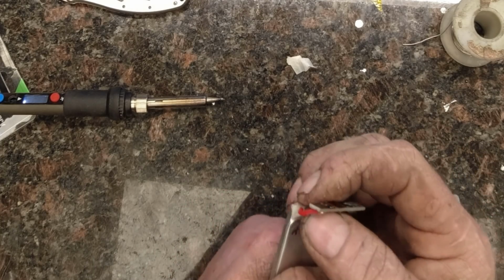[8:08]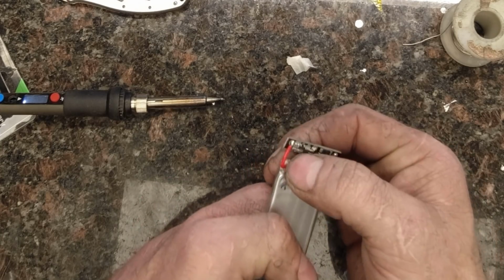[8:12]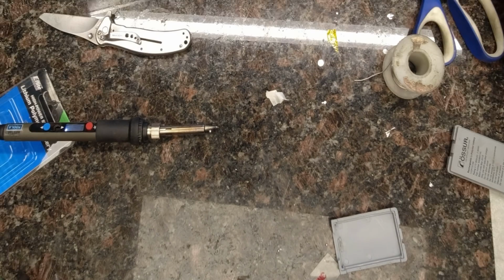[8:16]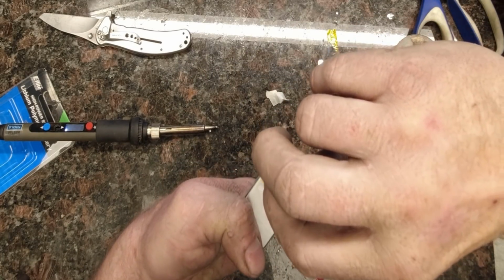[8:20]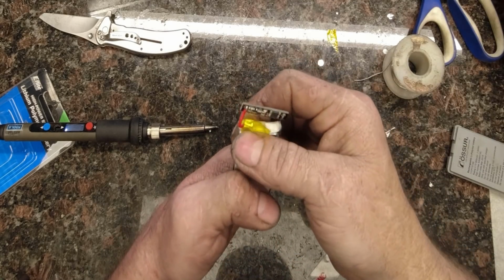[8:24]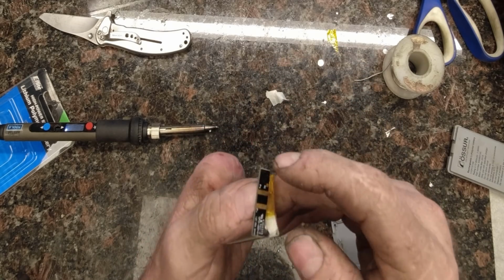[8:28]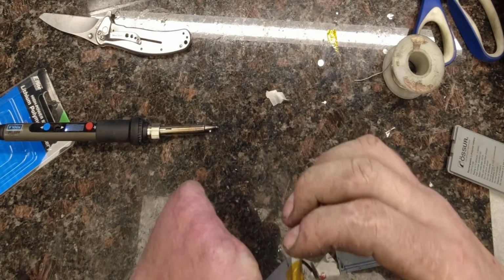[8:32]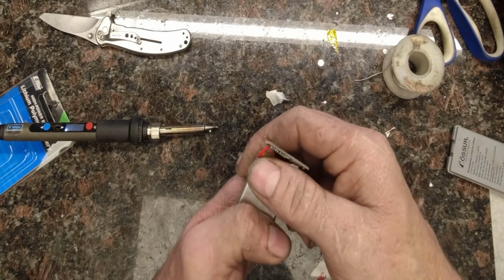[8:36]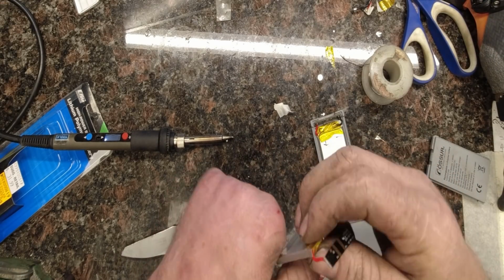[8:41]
Let's take some of this thin tape, and I'll go back and do this to the other one too, to actually isolate the individual terminals. I mean, the Kapton tape itself ought to be good enough. I was just thinking that it'd probably be better to isolate the terminals from each other. We have our little masking tape right there, because we're going to fold those terminals back onto that. Just like that, and then cap it with tape from there. There's one. Okay, and that one's all covered up and protected.
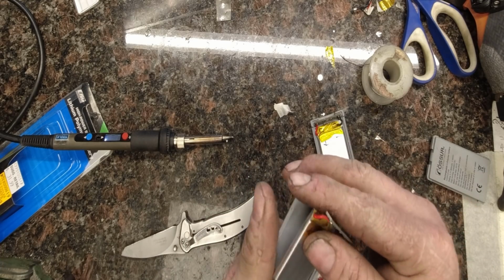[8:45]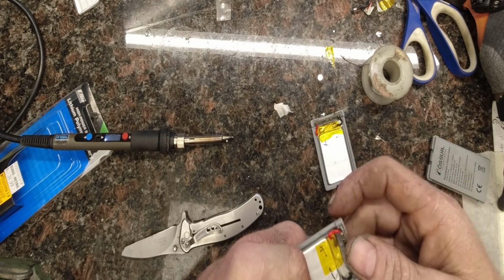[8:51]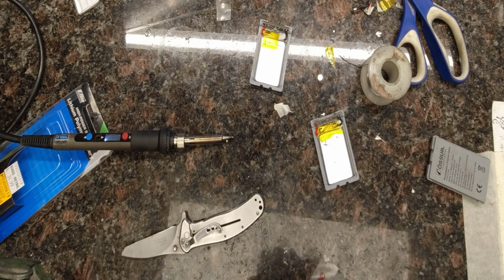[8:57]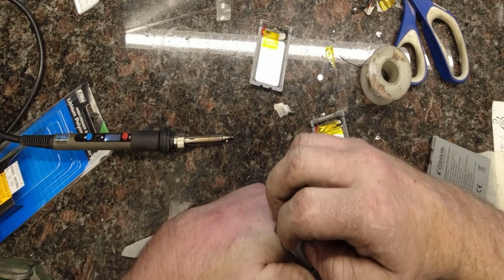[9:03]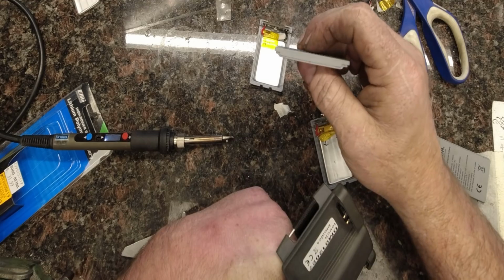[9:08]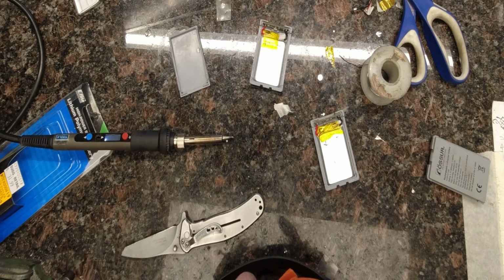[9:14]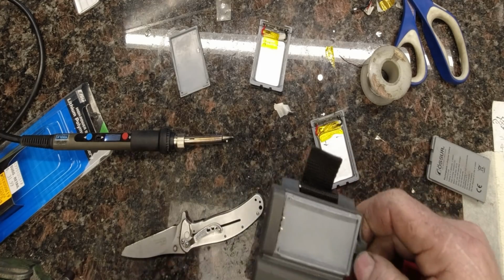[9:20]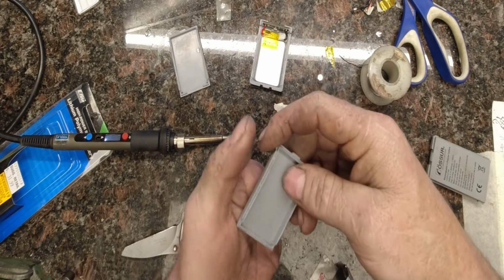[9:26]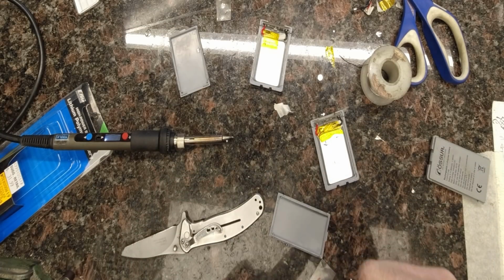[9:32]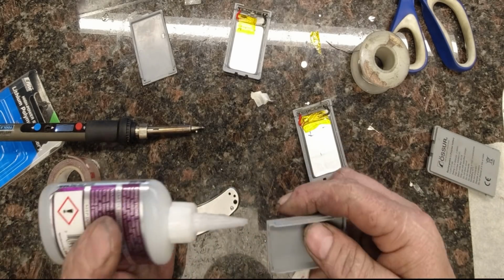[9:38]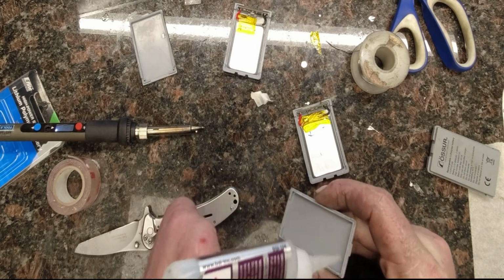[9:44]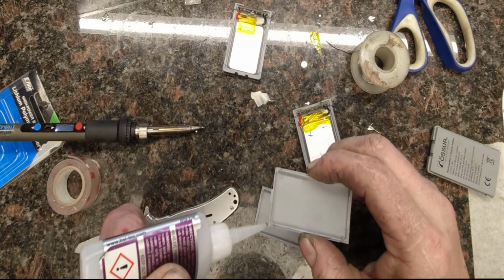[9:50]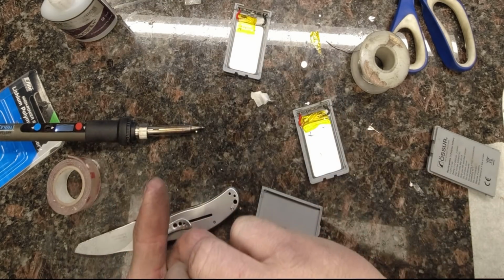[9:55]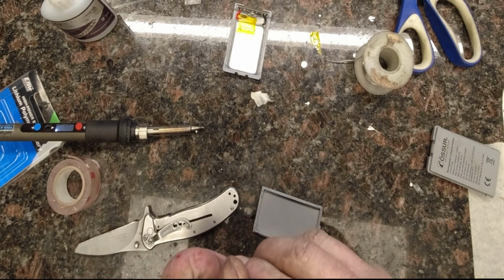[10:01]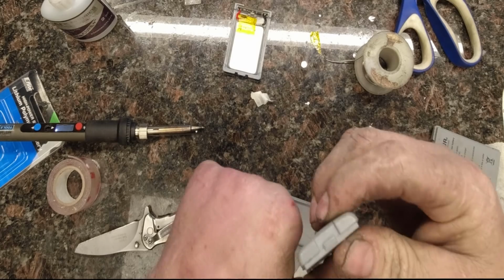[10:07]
And two. Like I said, when my battery packs came apart, I was lucky, because it took the two clamshells, and evidently mine weren't super glued together like a lot of them are. So, now we'll just use a couple dots of glue just to close the cell up. Just a couple dots, in the corners, in case I need to open it back up. And there you go. Good as new.
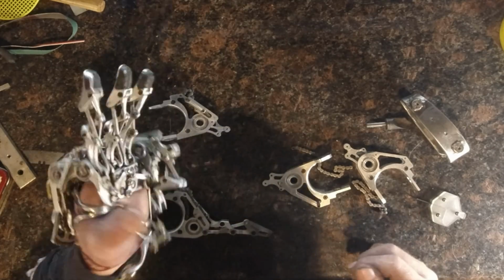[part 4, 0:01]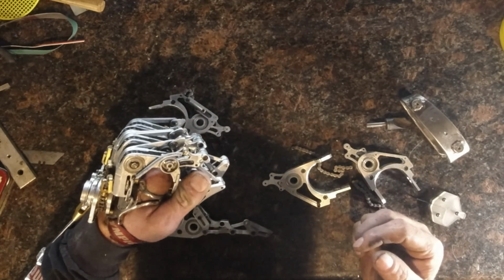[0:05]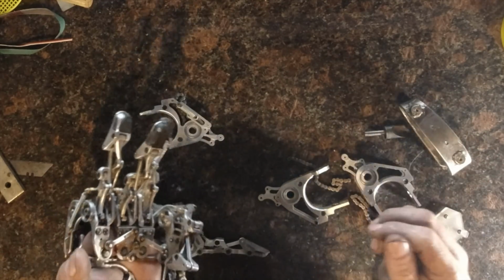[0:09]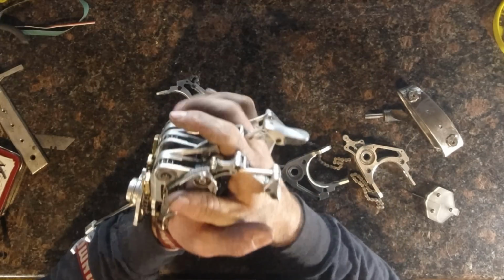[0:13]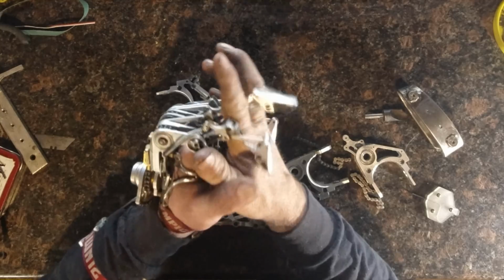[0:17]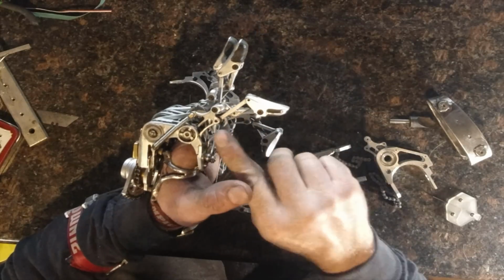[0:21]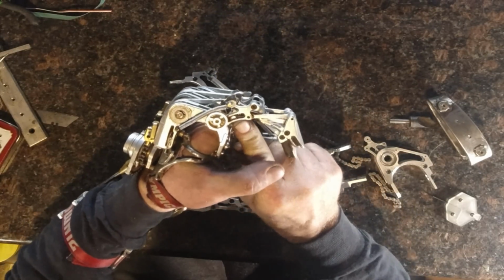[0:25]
So I thought I'd take a moment and share with you something I've been working on for quite a bit, and I finally think I have a reasonable solution for it. So, on my current hand, the position of the fingertips are all relative to the position of the proximals. So, proximals, medials, distals. So, when the proximal gets blocked, then the medial distal can't travel any further.
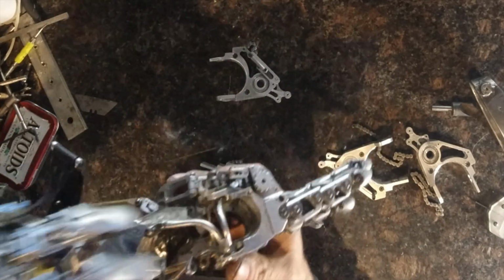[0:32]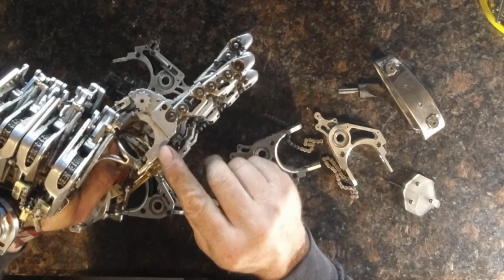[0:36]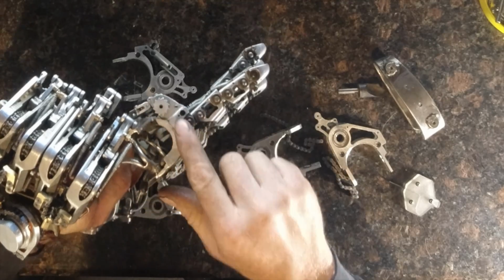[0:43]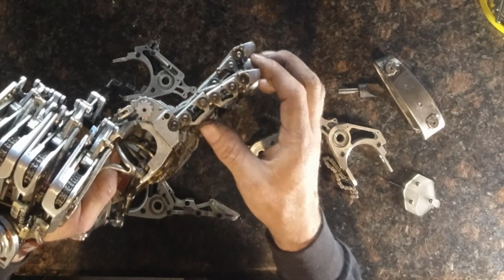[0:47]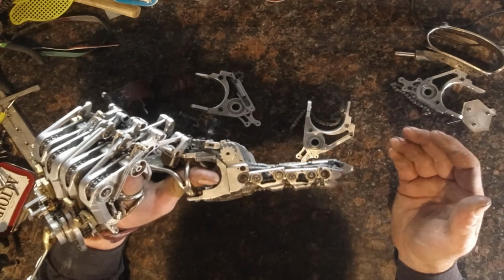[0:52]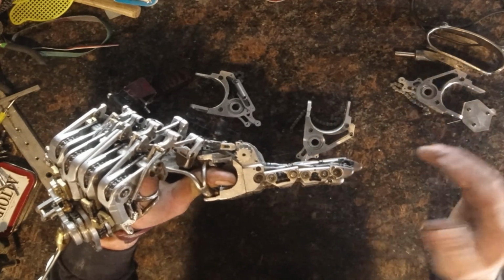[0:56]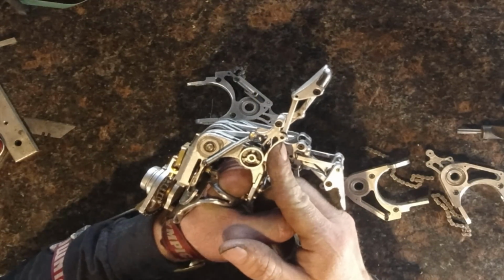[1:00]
Now, on the 156 hand, that was taken care of because the chain pulled all the way through the finger from the distal, through the medial, through the proximal, and then up the metacarpal base. So, no matter where the position of this was, this finger could continue to close. So the 156 finger is great and all, but its part count is more than double of the 158. But the 158 does have that as a limitation. If the proximal gets blocked, then the rest of the finger can't turn.
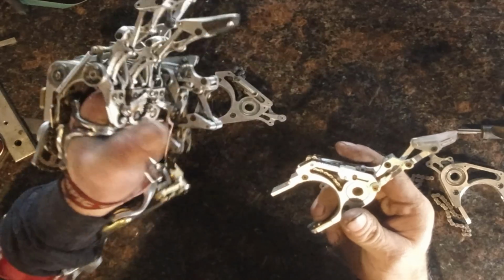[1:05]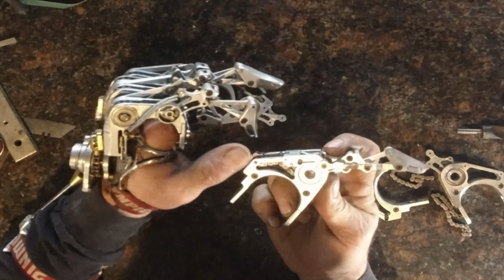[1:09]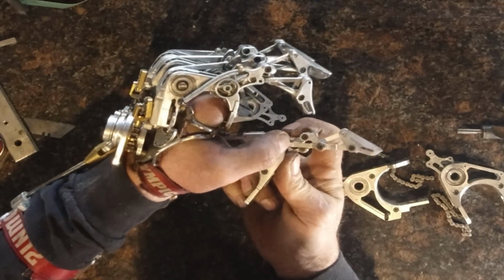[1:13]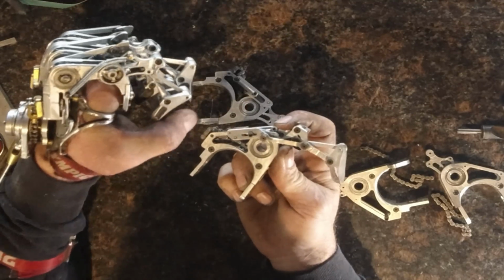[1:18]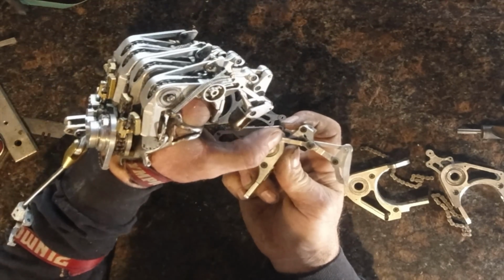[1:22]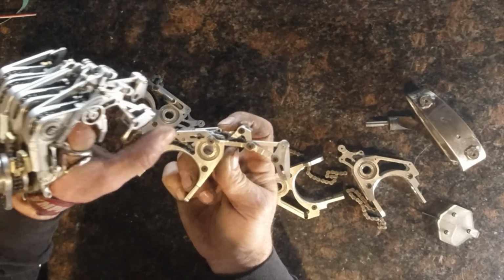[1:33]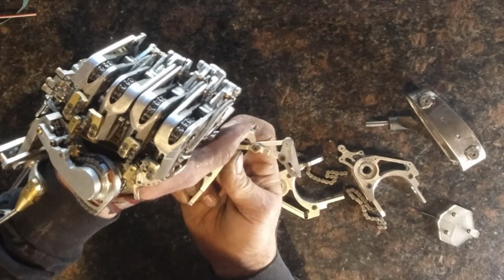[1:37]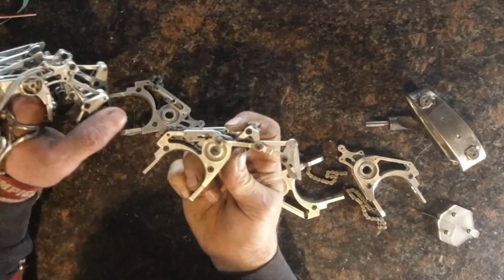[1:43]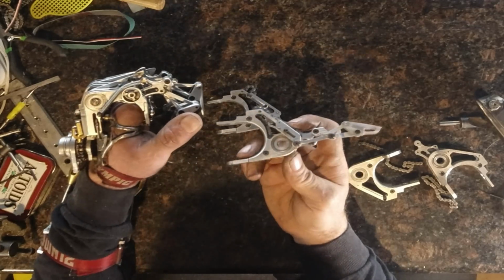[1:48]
While I was making the parts, I came up with an idea of what if I was able to come up with a way that once the proximal got blocked, the link that controls the medial and distal was allowed to travel just a little bit further, and that would allow the medial and distal to close a little bit further. So, by having this link endpoint be on a movable slide that's connected to this loop of chain, the same loop of chain that moves the proximal, then it would allow the medial and distal to continue to close even after the proximal is blocked. Something that I thought I'd share with you guys. I'm pretty excited about it.
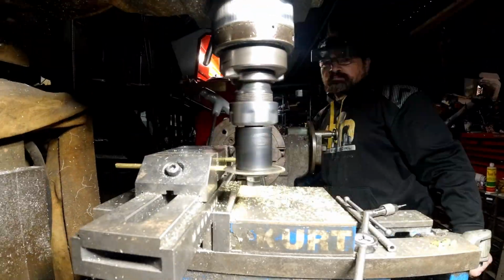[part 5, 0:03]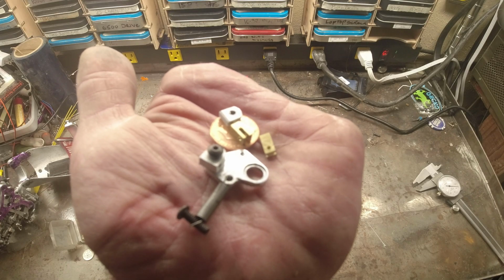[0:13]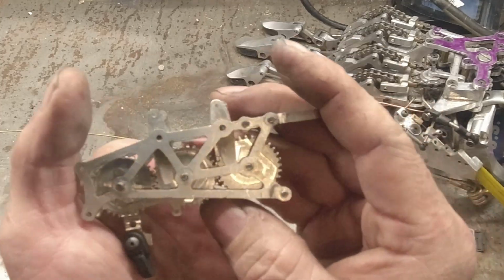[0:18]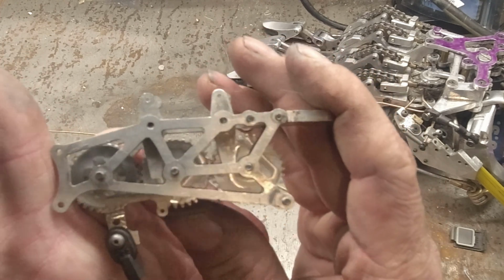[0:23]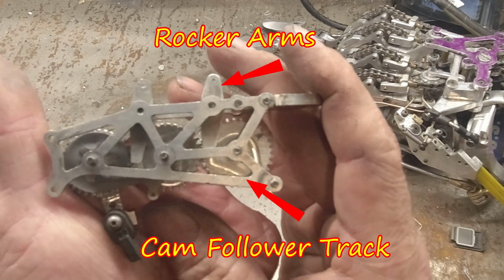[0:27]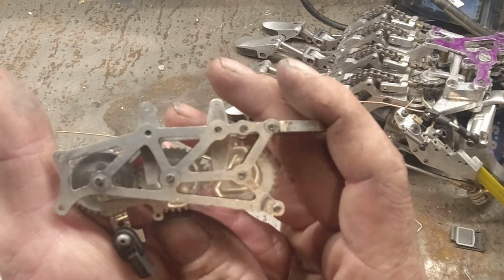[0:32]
This week I've been working on the super tiny parts that make up the grip pattern selector mechanism on my new hand. Let me show you how it works. These are the major components that make up the grip pattern selector linkage of my new hand. This is an early model of the gear train that I'll be using for the forearm grip pattern selector. As the gears rotate, it moves the cam followers and rocker arms forward and backwards to pull and push onto the cable, releasing and catching the fingers in the grip pattern selector assembly.
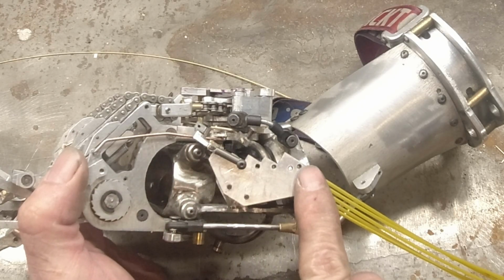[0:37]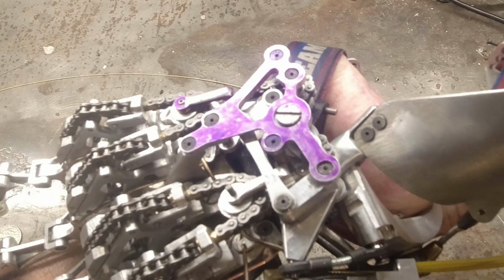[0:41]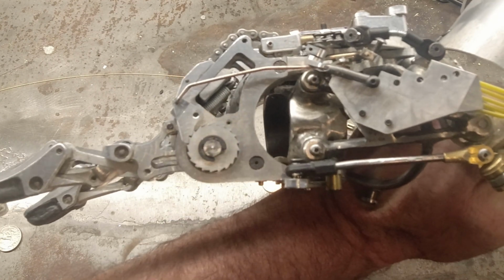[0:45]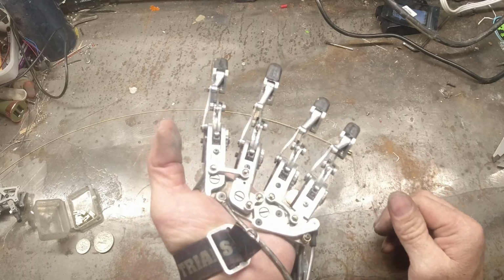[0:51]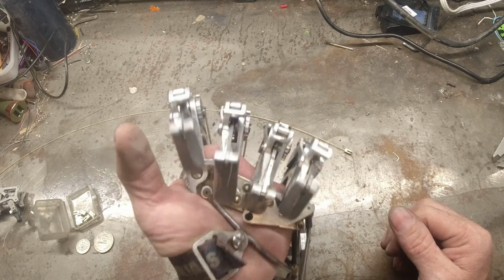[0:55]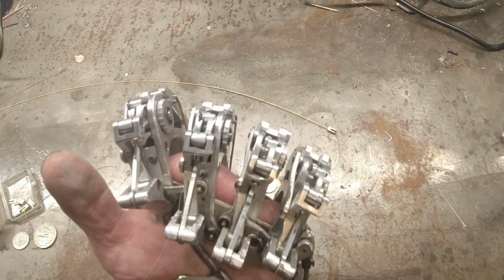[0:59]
There's 5 bell cranks that are mounted onto this block. When the cable's pulled, it articulates a bell crank on the top of the metacarpal base, and then that is translated to a bell crank that engages the sprag clutch. So right now, the hand operates open and closed just like normal. So if I were to pull on this cable, and then close the fingers, the pinky stays closed.
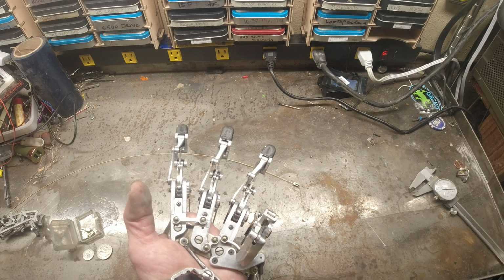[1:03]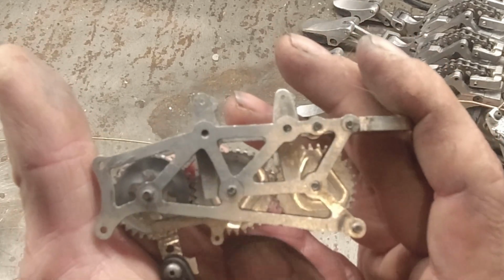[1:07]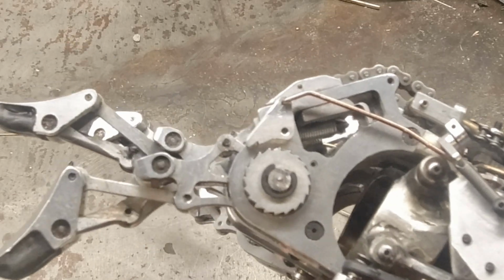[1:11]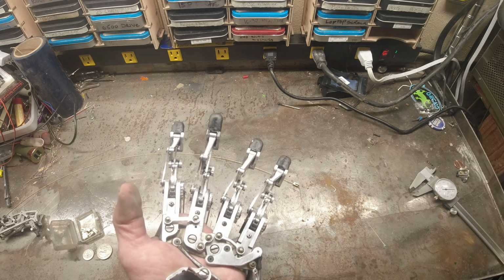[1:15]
Now to release the finger, the gears would rotate, the cam follower would advance, and the rocker arm would change positions from closed to open. When that happens, the bell crank is released, and so is the finger.
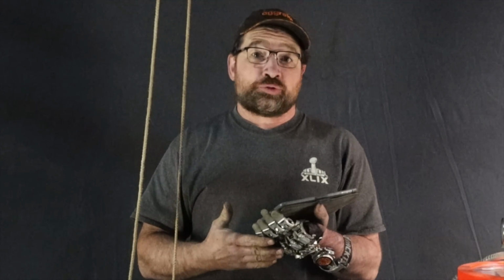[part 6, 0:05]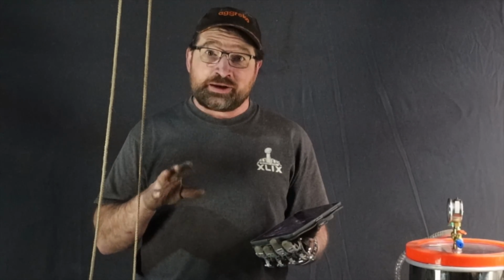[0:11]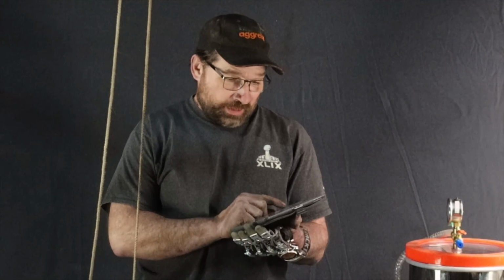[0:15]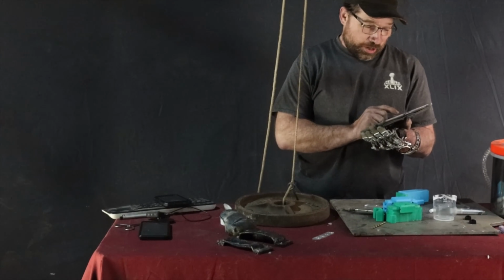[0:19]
Today I wanted to show you something kind of cool that I've been working on, the new 3D printed hand. So today I was pouring some silicone fingertips and I got the idea to break out a 25 pound weight, loop a rope over the top of my audio crossbar and show you what I've come up with for a lockable link for the fingers.
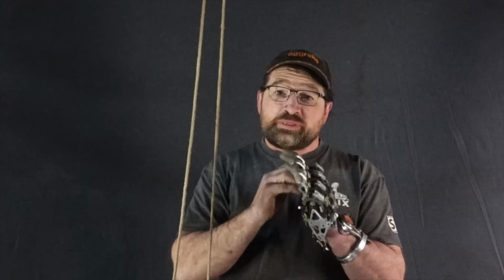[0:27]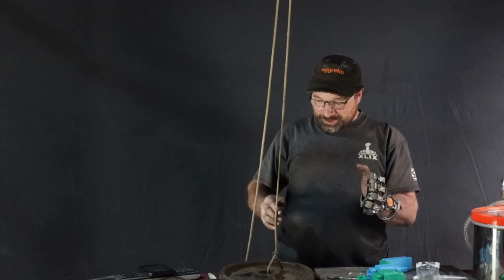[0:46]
So when there's no load applied to the fingers, they open and close just like normal. But as soon as a load is applied to the fingers, they lock in place until the load is removed, then they spring back like the fingers would normally operate. To show you the functionality of it, I thought I'd do a weight test for you.
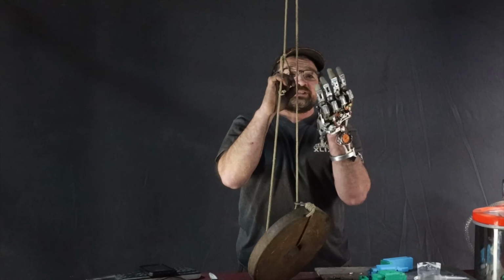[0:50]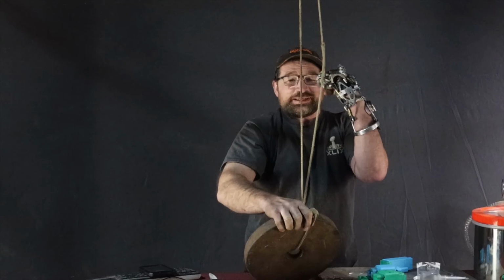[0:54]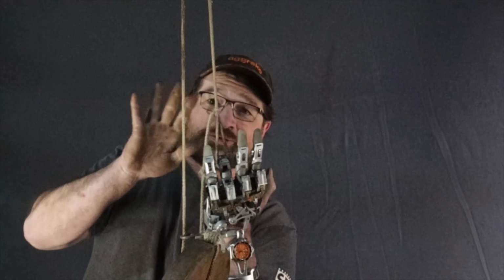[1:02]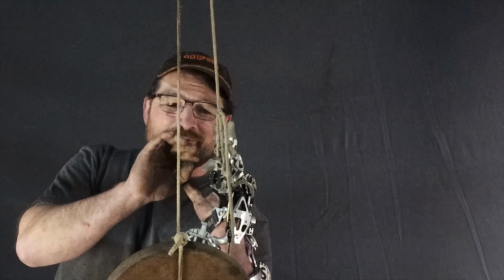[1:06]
So I'm gonna suspend 25 pounds, lock a finger, and you can see the type of load that we're talking. Okay, so fingers are locked. You can see that the other three are free from load, and the finger is locked in a curl position.
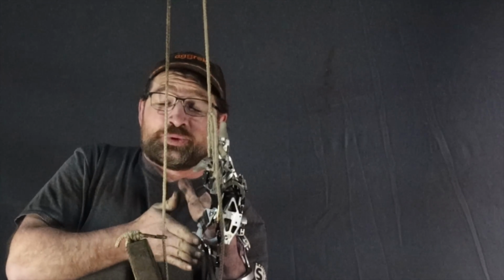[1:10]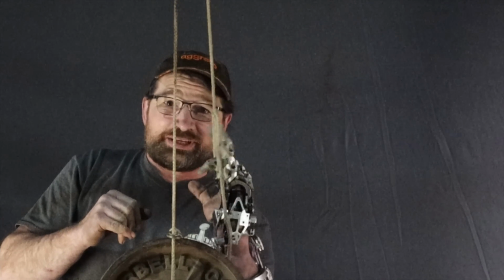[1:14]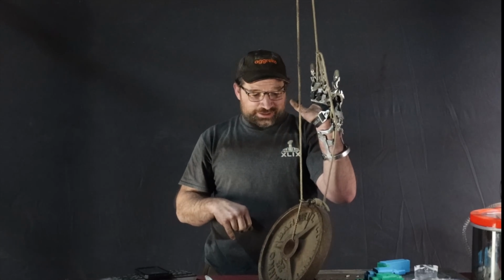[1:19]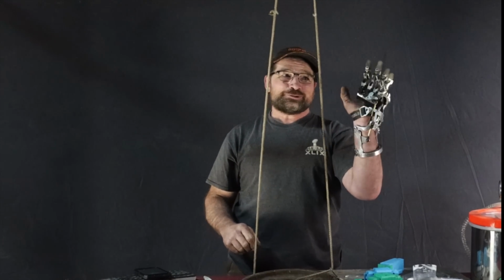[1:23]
Now, I'm not doing any input with my wrist. You know, I can move my wrist independent of that finger. Now, as soon as the load is released, then the finger's released.
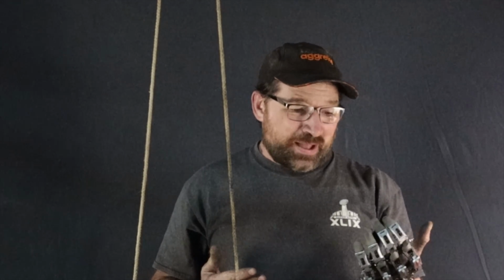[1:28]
Pretty cool feature. I still have a bit of refinement to do left on it, but neat proof of concept.
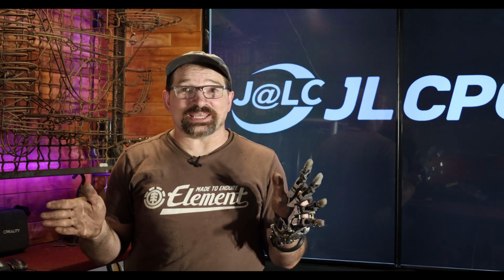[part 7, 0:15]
If you caught my short from the other week, then you're aware that I've finally gone forward with placing the order for all the components that are going to make up the version 2 of my 3D printed prosthetic hand. It's been a lot of work and it's a huge thing for me.
Once again, JLCPCB will be doing the printing for me. They did a wonderful job on the parts last time and I'm sure I can expect the same great service this time. And when I let my representative know that I was ready to prototype the second version of my hand, she was excited and immediately on board. And once my hand is refined to its final form, my plan is to have them be the supplier for all the 3D printed components.
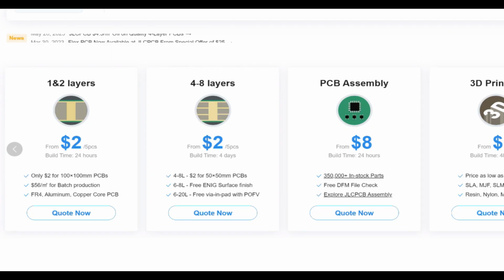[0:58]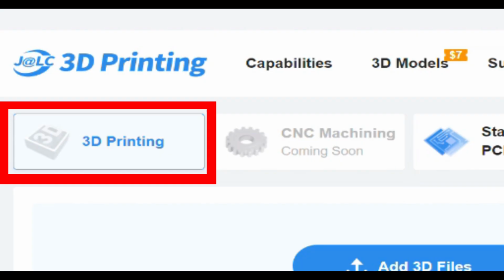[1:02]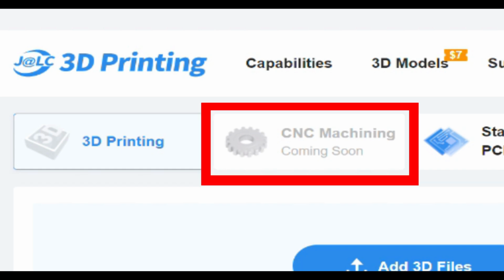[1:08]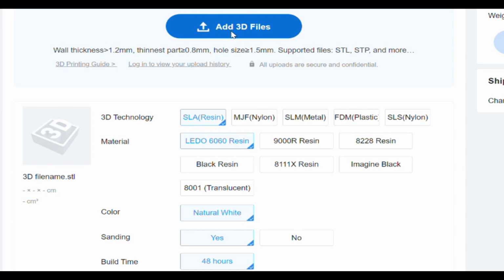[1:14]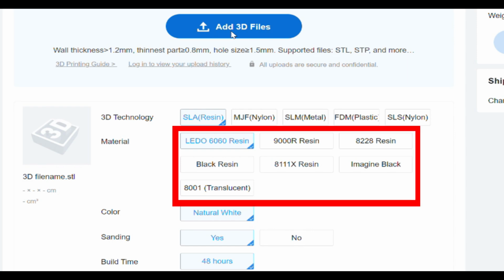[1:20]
Over the last couple years, they've been expanding their services beyond solely manufacturing custom multi-layer printed circuit boards. They now offer additive manufacturing. In the near future, they also plan to start offering select machining operations. Currently, their printing capabilities include SLA, multi-jet fusion, SLM, FDM, and SLS, all in a variety of materials.
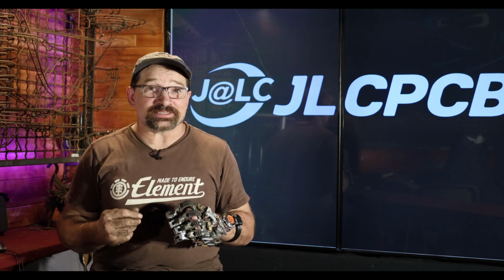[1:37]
For my project, I'll be having my parts printed with multi-jet fusion for the PA-12 and SLM for all the stainless parts. All but the parts under the greatest load are going to be printed in PA-12 nylon, with the others that require greater strength printed in stainless steel.
With this order, I'm also taking the opportunity to print selected parts in both materials to test the durability of nylon in some of the more load-bearing applications. This will allow me to confirm which parts truly need to be printed in stainless and which I can opt to have made out of a lighter material. It'll be interesting to see just how strong the PA-12 is compared to the stainless in the assemblies that are subject to higher loads.
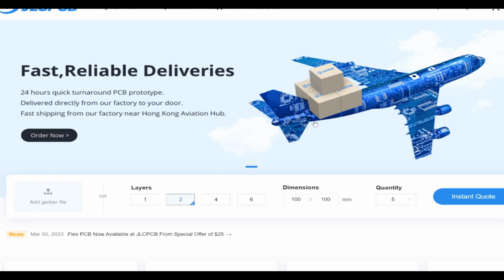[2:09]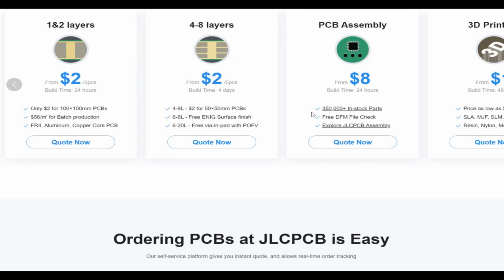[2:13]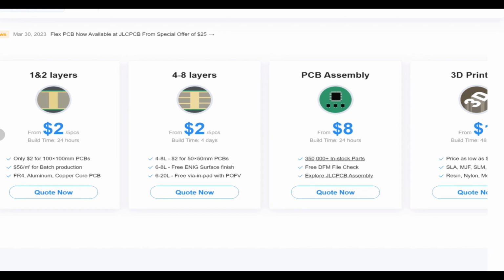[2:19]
If you decide to check out their website, you'll notice that it's super straightforward. From the landing page, select the type of service that you're looking for, from multi-layer PCB fabrication and electronic assembly to 3D printing, and soon, light manufacturing. As of yet, I've only had experience with their 3D printing service, but I'm sure the other offerings are up to par just the same.
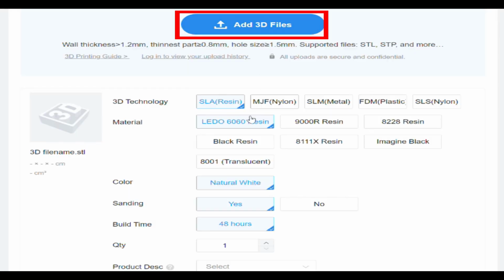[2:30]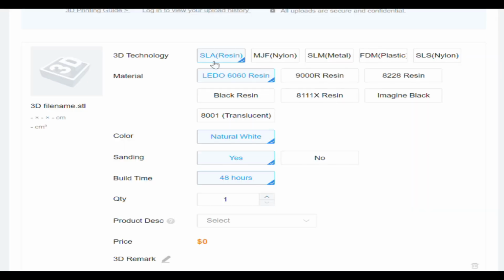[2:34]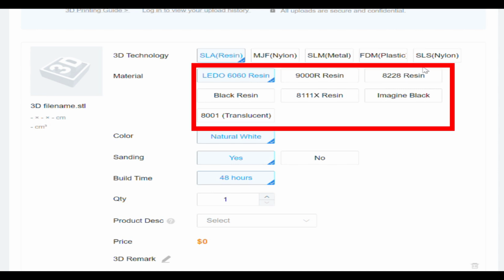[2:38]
For me, I click on the 3D printing. Here's where you get the prompt to upload your files. You can upload up to 5 files at a time. Once they're uploaded and shown in the preview, you select the process, material, and quantity. After that, you give your parts a name and add them to your cart.
Something to keep in mind if you have a pile of parts in your build: the maximum number of components you can have in a single order is 30. For my collection of parts, I had to break it up into 2 orders because the build is almost a complete kit for this hand. It includes everything from the wrist gimbal, gaffney, winder, and fingers.
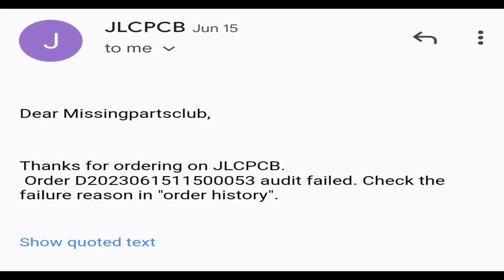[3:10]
So once you have your order together, your files are verified for suitability in process and material. If there are any issues, they'll send you an email noting where you might have possible issues. At that time, you can either risk the print or upload a modified STL.
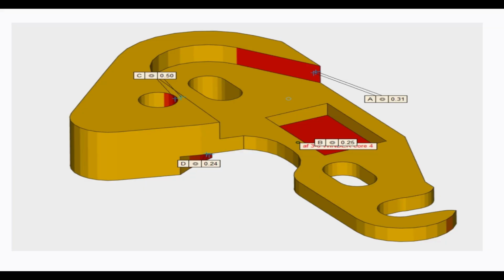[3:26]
This is where I most often get tripped up. A lot of my parts are designed to be machined, and you can do a lot of things with machining that just don't work out well with printing. I usually wind up needing to modify the clearances to the recommended 1.5 millimeter minimums, as well as change some of the hole diameters. It's usually kind of a back and forth thing, but in my experience, they're super patient and always willing to work with you through this process.
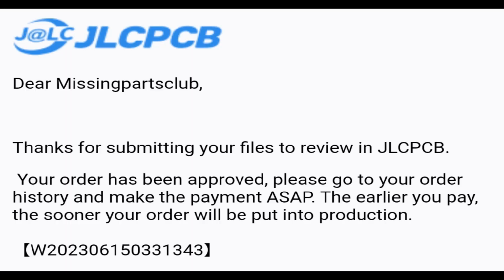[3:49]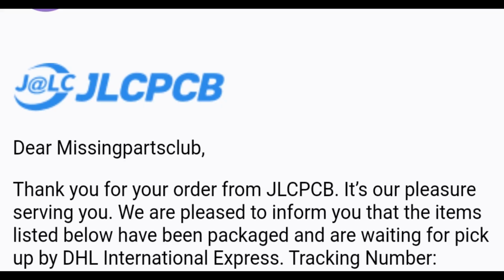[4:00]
Once all of your parts are approved, you'll receive an email confirmation and invoice. Once you submit your payment, your parts are assigned a place in the queue and they begin the manufacturing process. Once your order is complete, you'll receive a tracking number and before you know it, your parts will arrive at your doorstep. As soon as my orders arrive, I'll be sure to do an unboxing to show you how everything goes together.
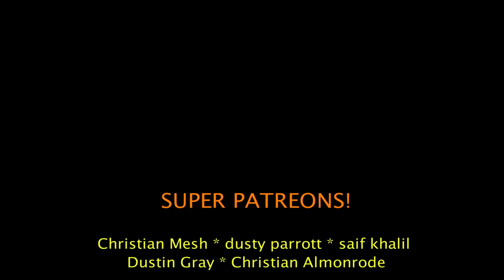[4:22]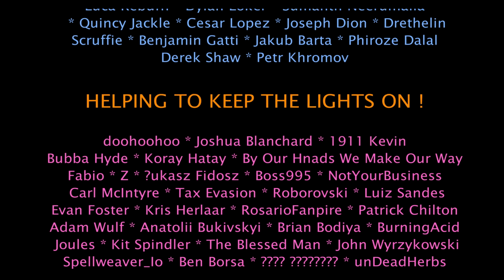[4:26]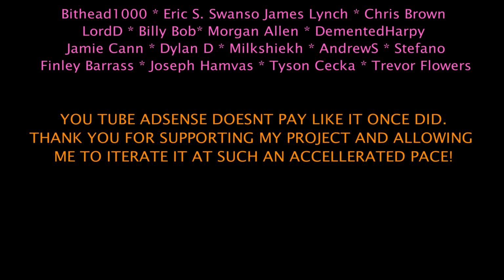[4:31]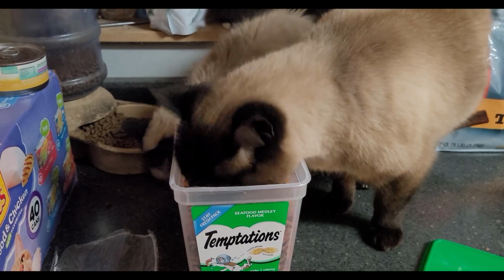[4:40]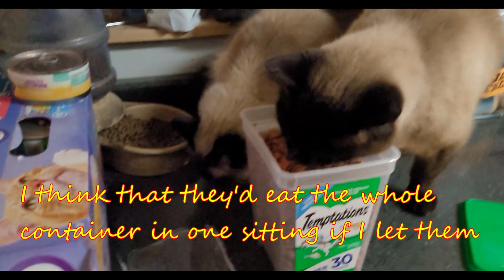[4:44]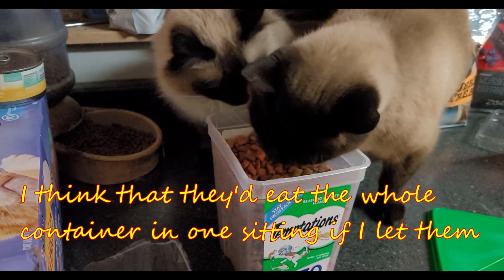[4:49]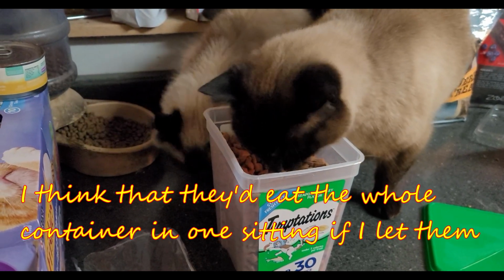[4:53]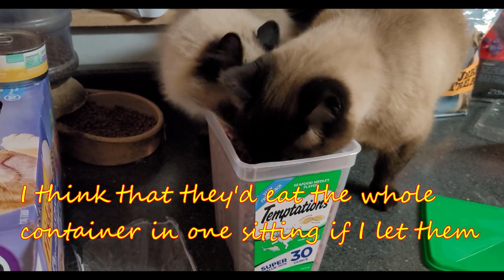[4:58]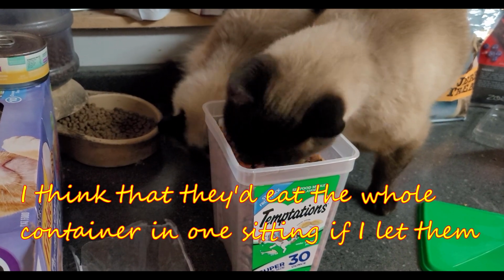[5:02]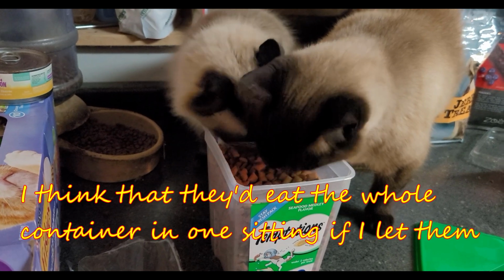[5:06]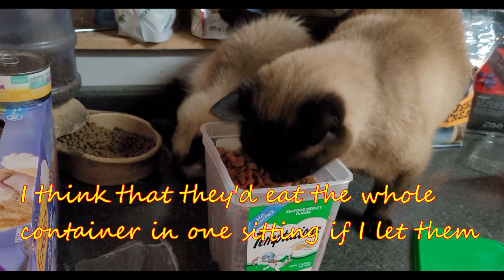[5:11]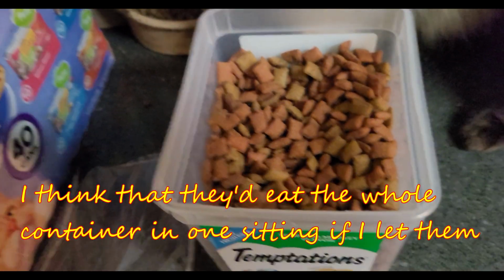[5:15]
Okay, guys, that's enough.
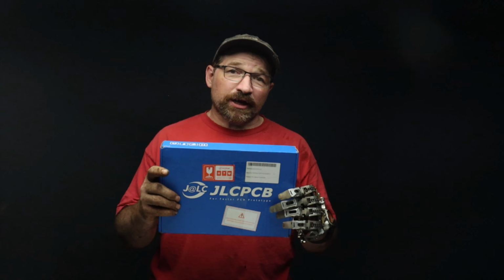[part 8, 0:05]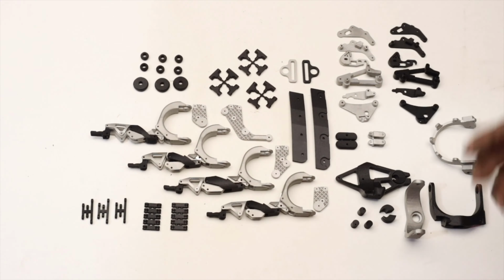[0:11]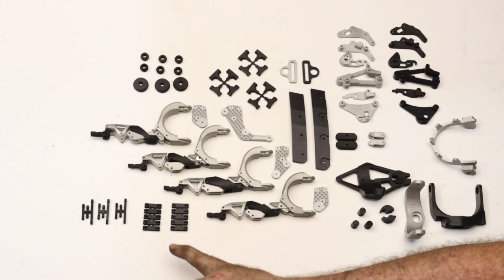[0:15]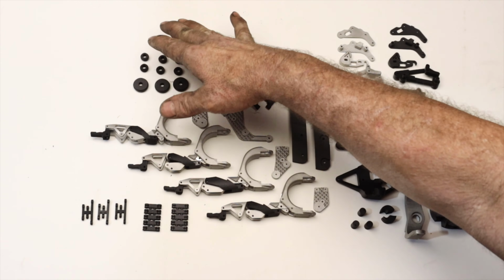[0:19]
In this video, I'll be showing you all the parts that I received from JLCPCB in order to make the version 2 of my prosthetic hand. So let's get started. Starting from the top, here's the complete finger assemblies with the distal links that I ended up nesting together. Here's the splay links, all of the rollers for the winder assembly.
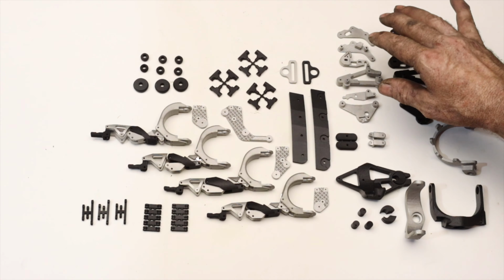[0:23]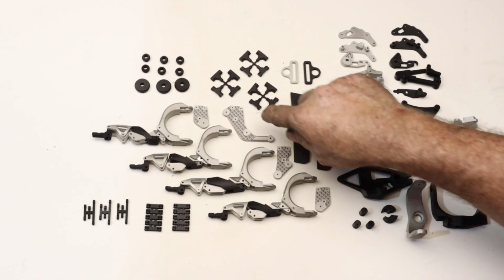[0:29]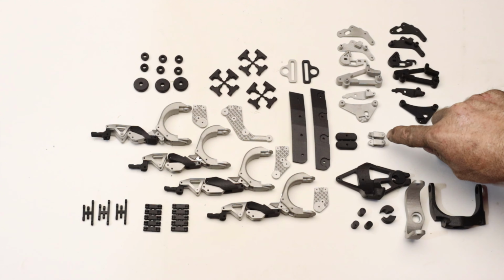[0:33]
I had to print a winder in stainless and PA12 just so I could do a comparison of strength to weight. Here are all the splay cap, upper and lower mounting plates, upper slides, upper clevises, the gaffney I did out of PA12 with the double offset to allow for more of a mounting misalignment to where everything rotates through the center when you mount everything to the socket.
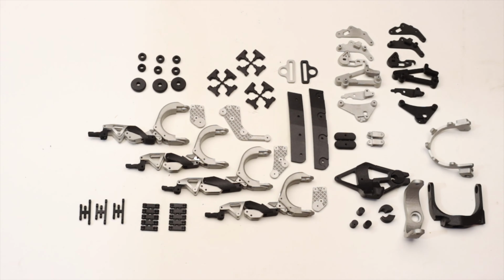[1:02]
I had a gimbal 1 done in stainless and PA12. Gimbal 2 I only did in stainless just because I need that extra strength. All of the load is put through that piece. And then we finish off with the upper strap mounts. This makes up the complete hand, plus, as I said, a couple of the assemblies in both stainless and PA12.
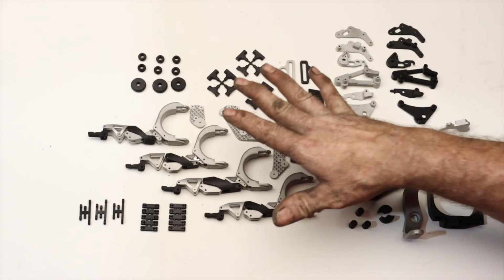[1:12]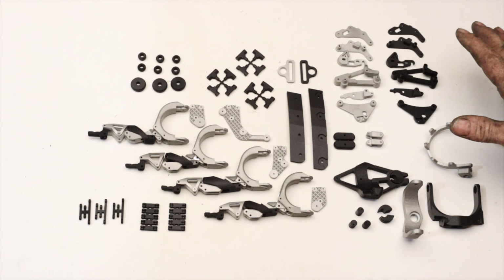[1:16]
Once I get everything together and fit and sanded, and I actually start using it, I'll be able to tell if I can opt for some of the lighter, less expensive parts, or if the parts truly need to be made out of stainless. It'll be a really interesting build coming up, and I'll be sure to keep you guys in the loop.
Over the next couple of videos, I'll show you the process I go through in order to fit and finish these fingers into their final form.
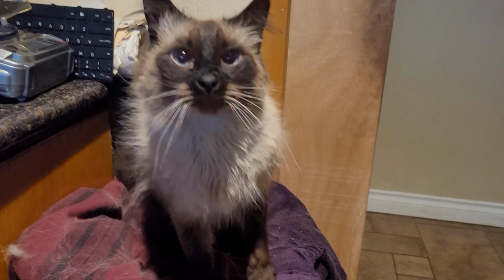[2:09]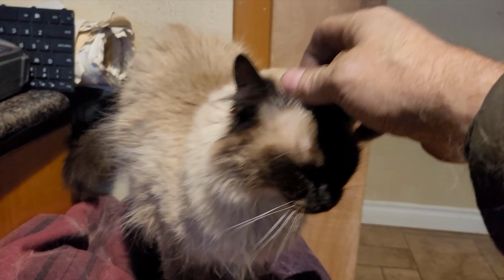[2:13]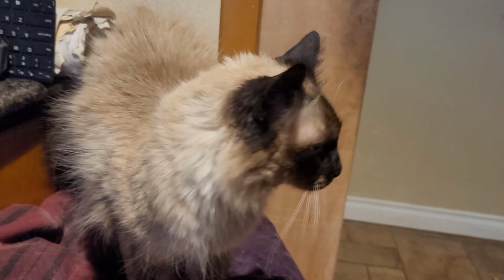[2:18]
You gonna be the best kitty?
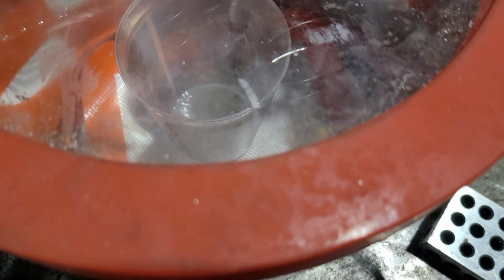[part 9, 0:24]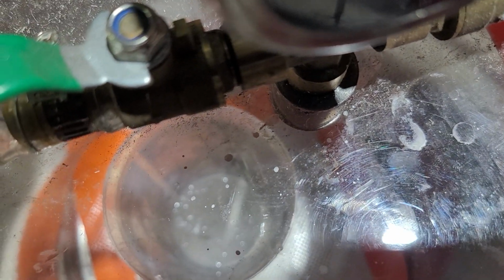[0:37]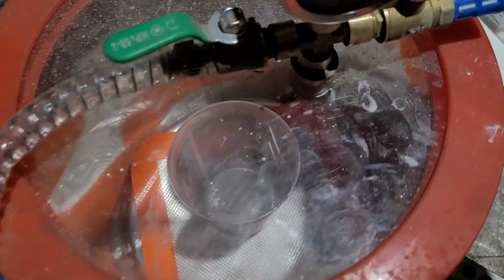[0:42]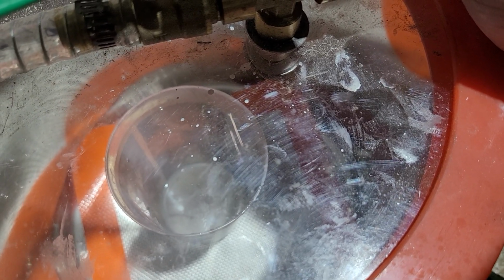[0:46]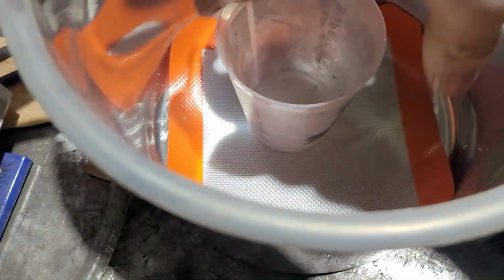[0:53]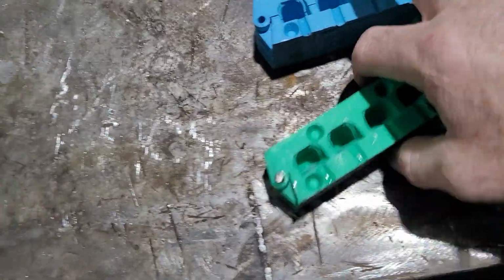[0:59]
Looks like most of the bubbles are gone. So turn the vacuum pump off and then slowly turn the vacuum off. Remove the top. Now we have relatively degassed silicone. Okay, I have both of these molds already set up to go.
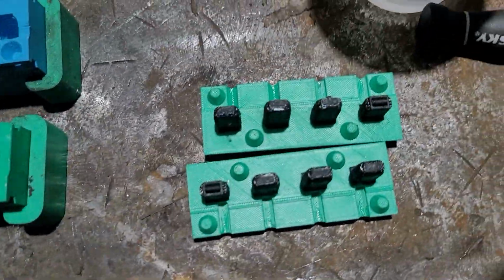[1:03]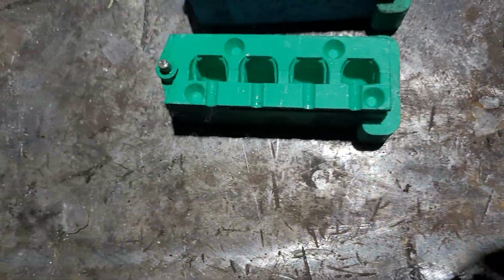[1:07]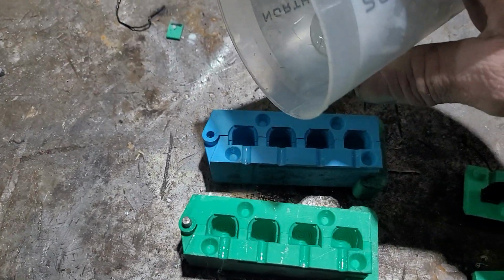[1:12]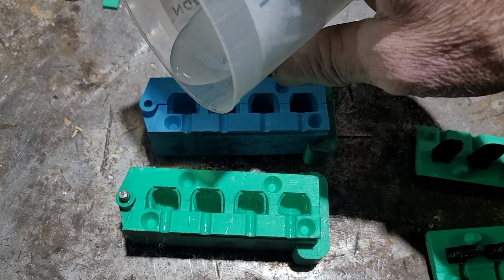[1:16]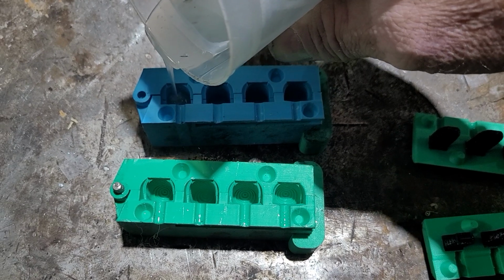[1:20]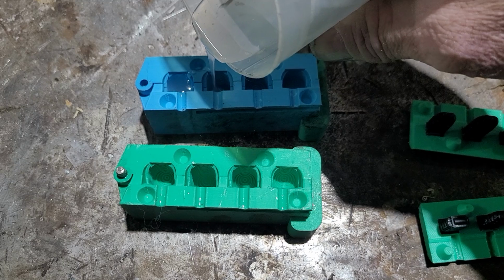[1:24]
Here are the caps with the new fingertip cores. So then I just start filling, do kind of a tall pour to get rid of any air bubbles that are going to be included. And I'll let it sit for just a skosh before I go and
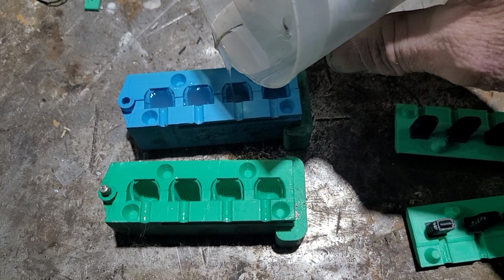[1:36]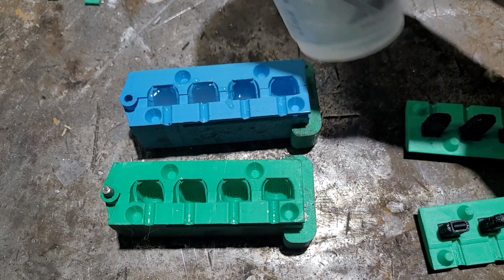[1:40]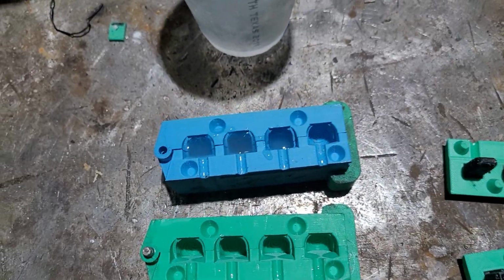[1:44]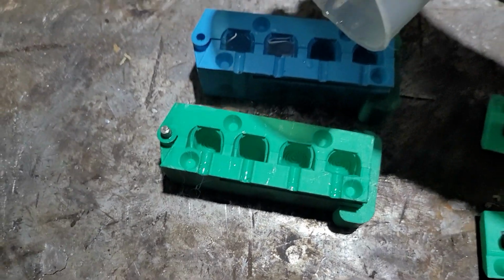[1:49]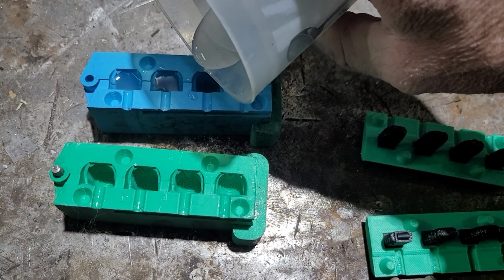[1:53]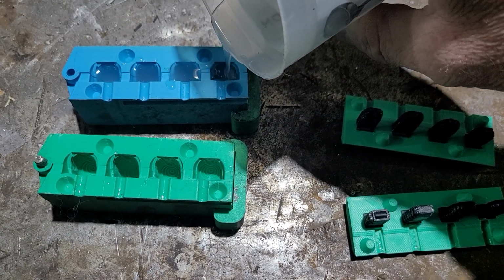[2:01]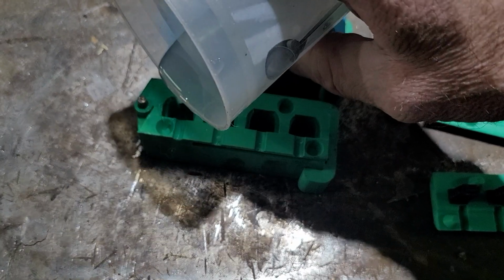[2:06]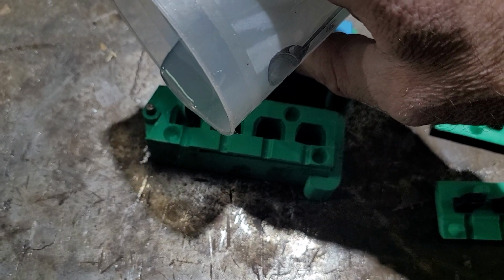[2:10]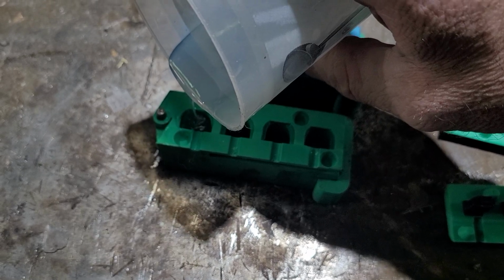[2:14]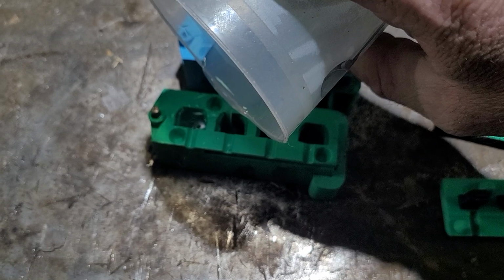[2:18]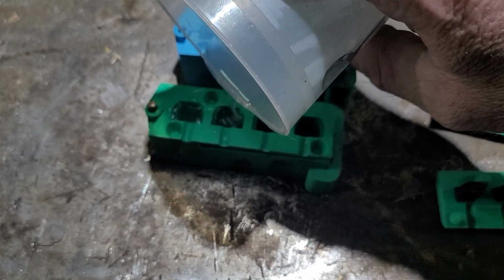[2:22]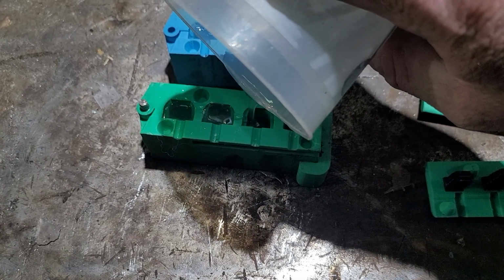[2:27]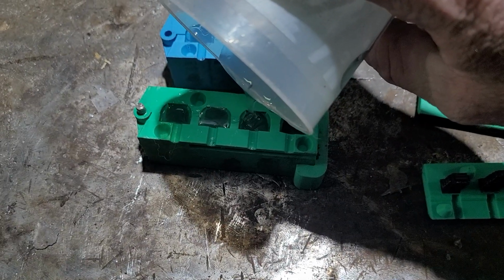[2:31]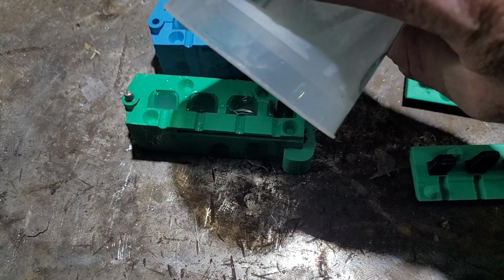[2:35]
put, oop, we got a little bit of something in there. Let's peel that out, whatever that is. Ew. Okay, and bloop. Oh, we're going to be close. Well, I mean, we always are.
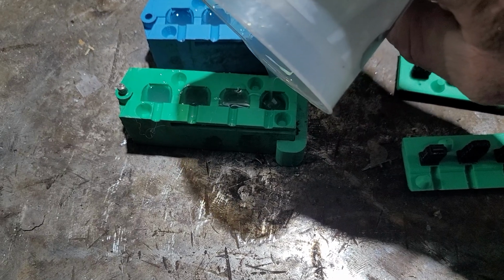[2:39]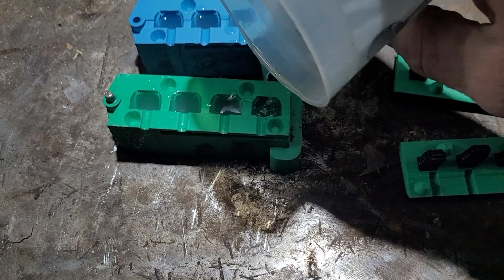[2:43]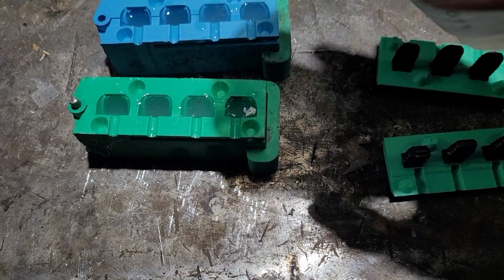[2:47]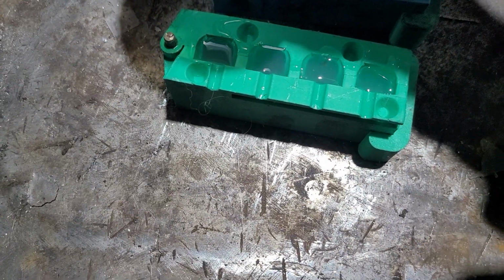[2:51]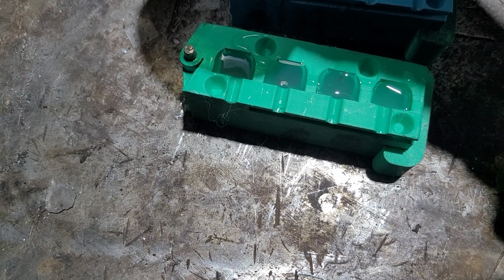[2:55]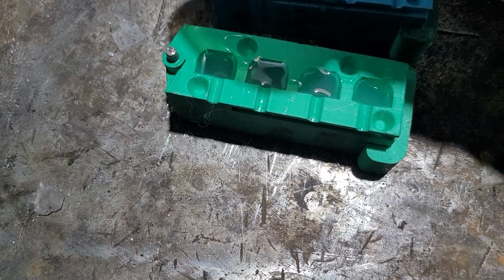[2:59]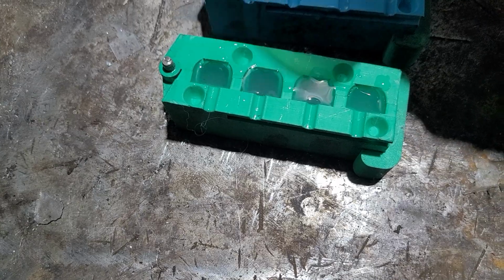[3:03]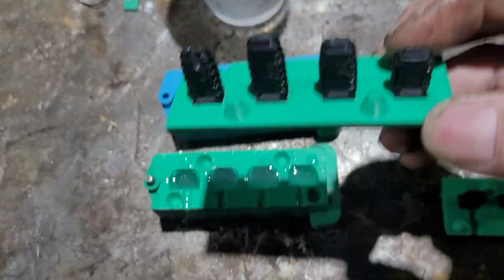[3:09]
Okay, so we put a little bit more in the first one because that one had a little bit of an air bubble going. A little bit in the second one, just to get it kind of topped off. Okay, all of those look pretty good. Then I take the cores, and I don't just mash it down there. I kind of let it settle its way down
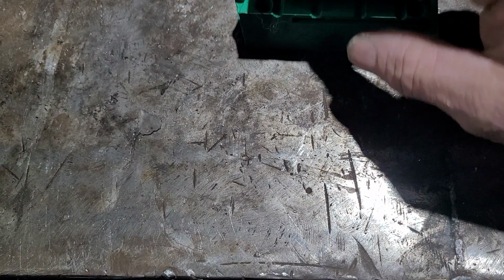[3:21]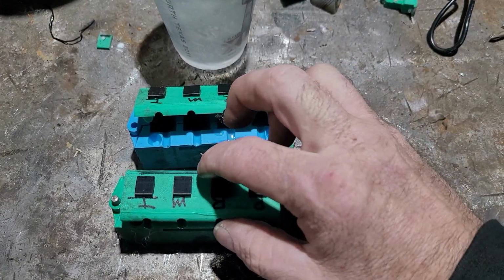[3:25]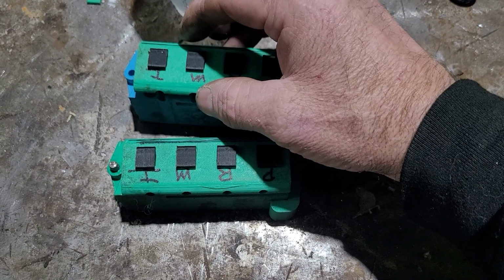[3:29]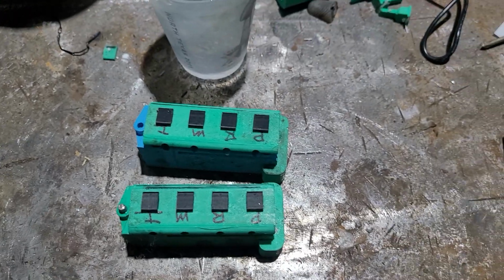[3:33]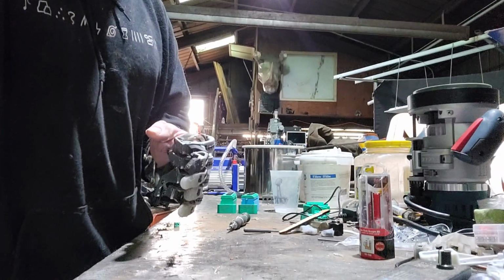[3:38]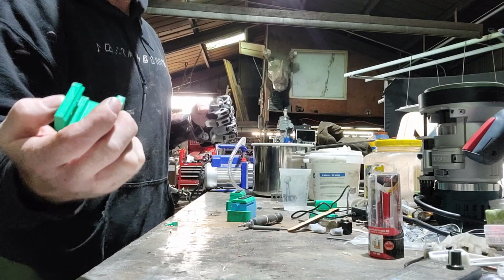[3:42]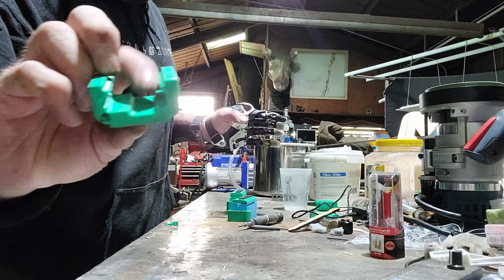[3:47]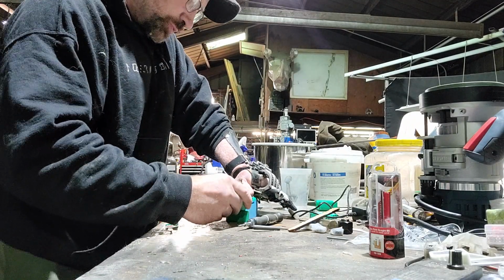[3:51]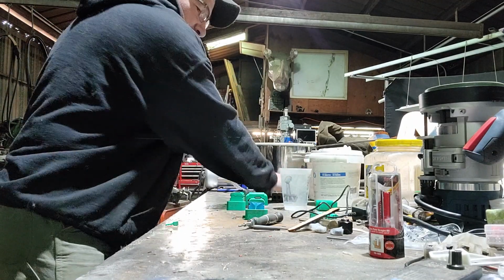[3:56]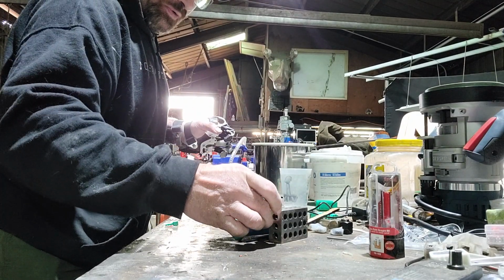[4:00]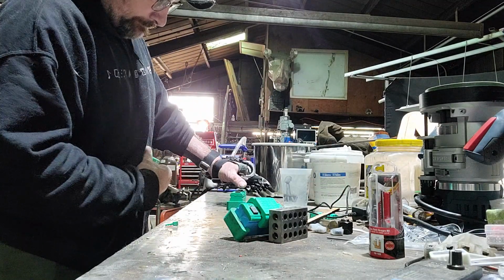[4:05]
and wait for those to get all the way. And then take the retainer for the top, make sure the little recess is facing the right direction. Push it all the way down. That's when everything's gonna kind of squish out. Throw that all the way there. I use a 1-2-3 block to kind of hold them at an angle to where not too much comes out of the holes.
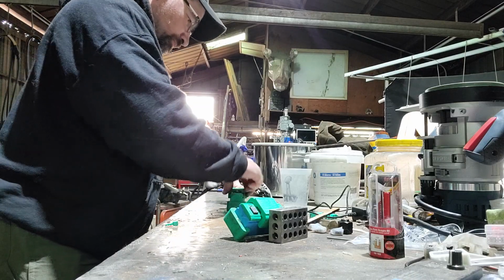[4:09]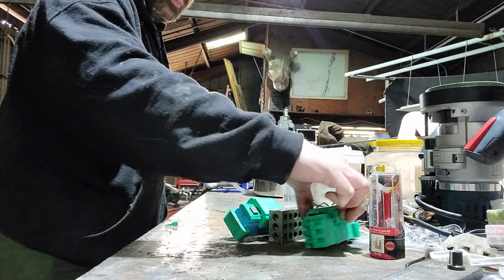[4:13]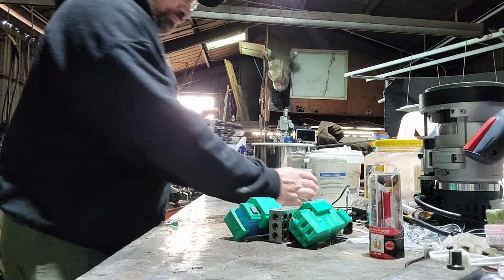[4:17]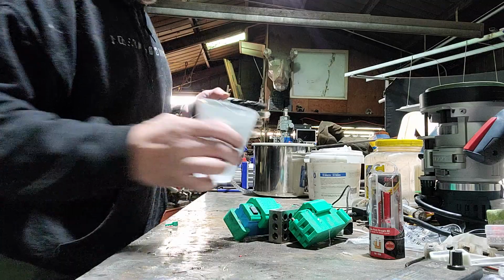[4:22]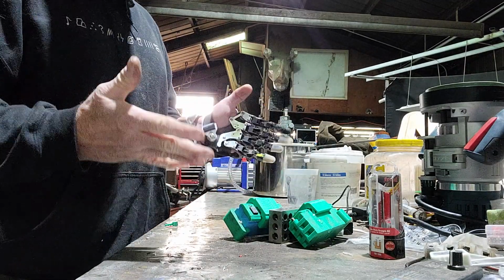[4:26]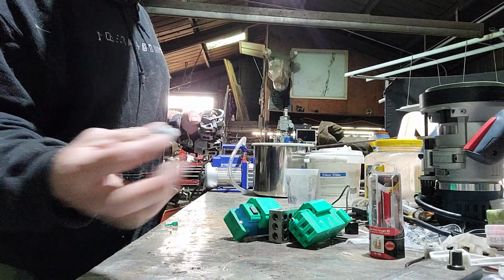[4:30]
And there you go. All prepped, and you see that just leaves just a little bit on the bottom. So 16 hours ought to have brand new fingertips that look like this.
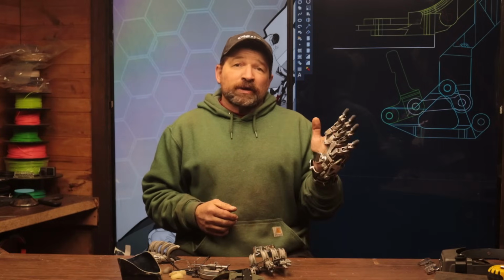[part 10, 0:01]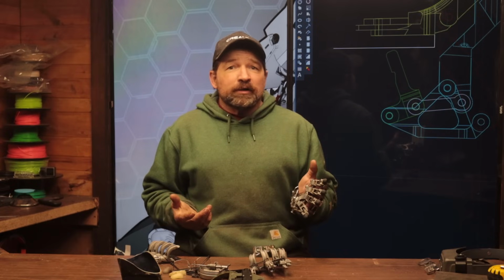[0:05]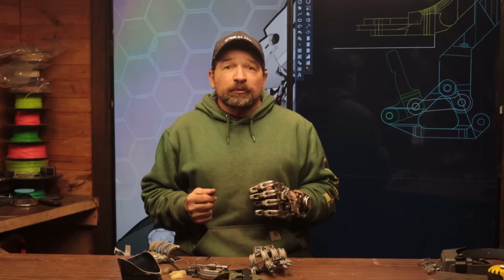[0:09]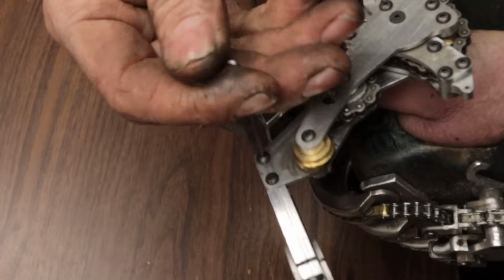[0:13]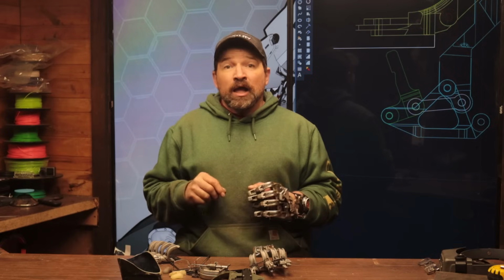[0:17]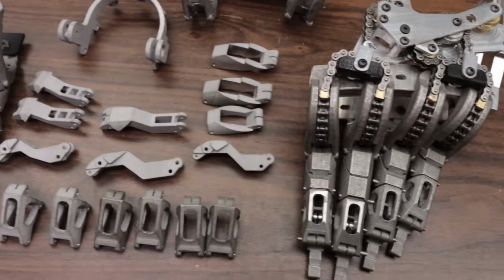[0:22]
It was starting to feel like I was making a video just because it was Tuesday, and not because I had something really important to say. I try to really respect your time and not make a new video just because I managed to bolt a couple new parts together. I'm happy to say the parts that I received from PCBWay went together really nicely.
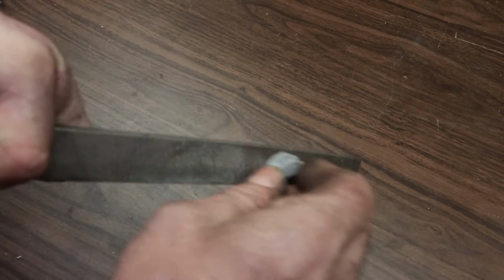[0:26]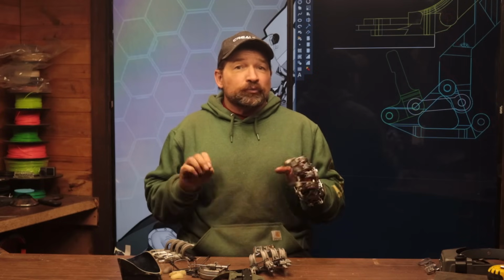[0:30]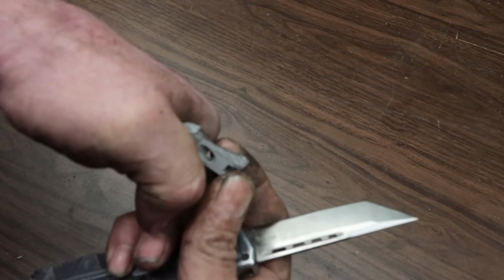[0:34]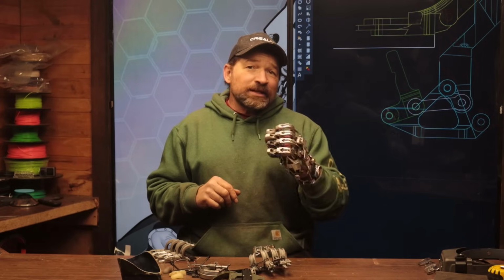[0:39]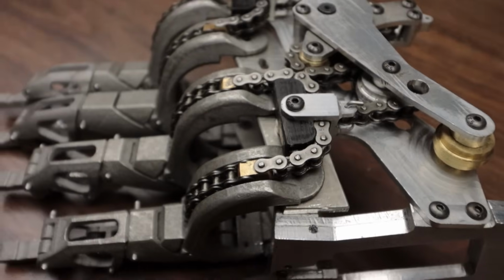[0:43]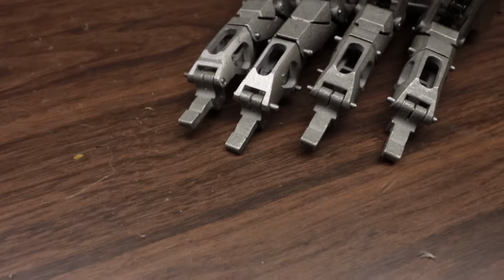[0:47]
As expected, there was a bit of filing on the mating surface to get things to fit just right. But I'll be told, the fitting process went pretty quickly. The aluminum is a bit soft, but should be okay as a long-term material. Really, only time and continued use will tell. But unless something dramatic happens, I think the fingers themselves, from the mounting rails to the distals, are in their final revision.
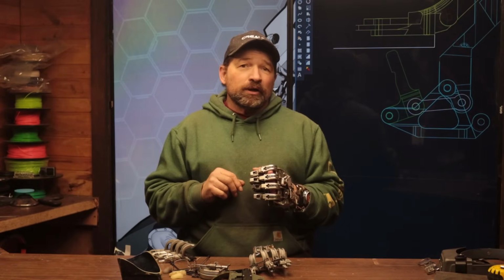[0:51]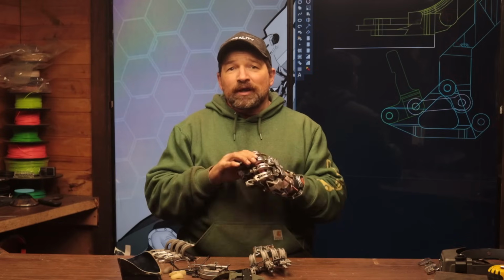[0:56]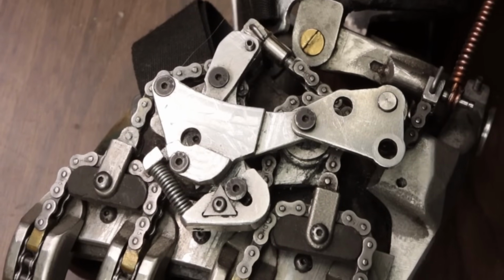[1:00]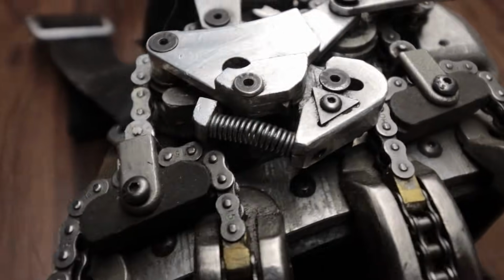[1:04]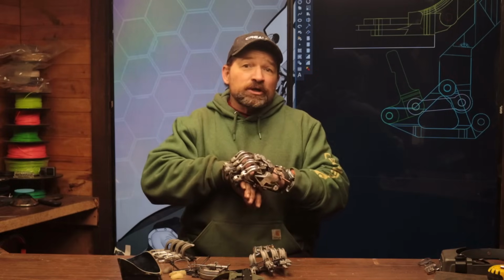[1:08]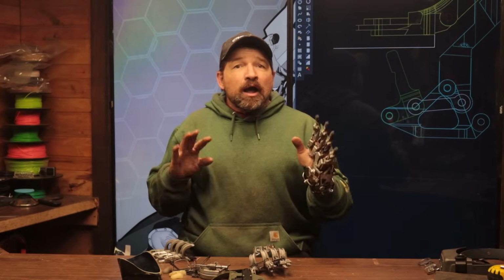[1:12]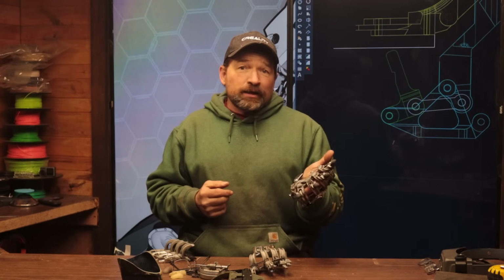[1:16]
Before my break, I was working on a way of preventing the fingers from backdriving as long as a load was being applied to the finger. With my current device, I was achieving the lockup in the winder. I was using a balance spring to separate a pair of hardened cleats that would engage once there was about 10 pounds of force trying to open up the fingers. After a bunch of trial and error, I was finally able to get reliable, repeatable results with this setup.
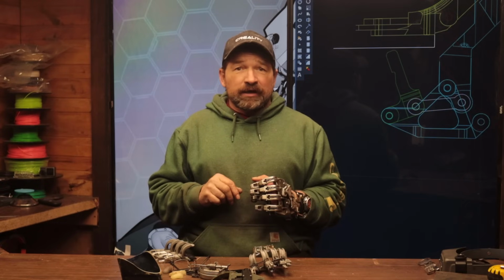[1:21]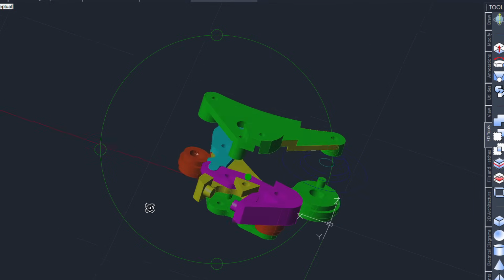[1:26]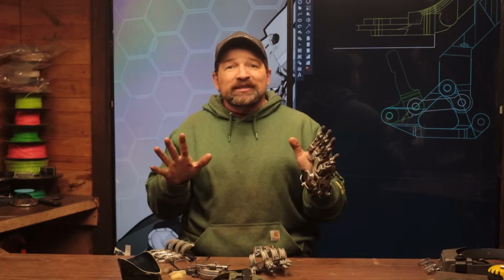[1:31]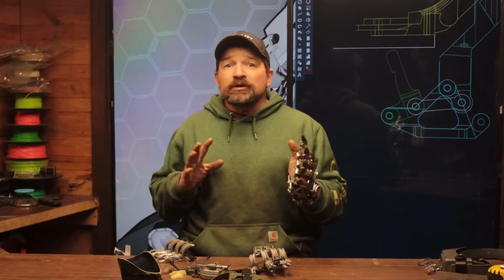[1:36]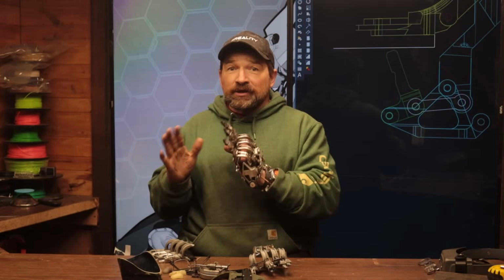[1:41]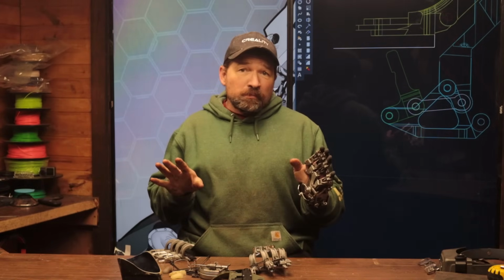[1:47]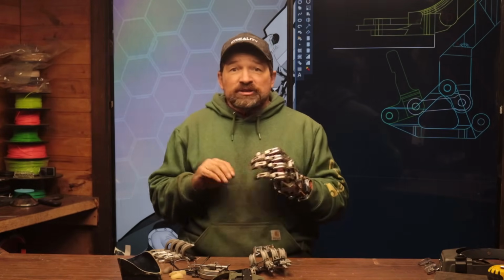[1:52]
Although I was able to get it to work, this method did have a couple downsides. First, the increased part count. This lock required an additional 8 parts. And while that isn't the end of the world, it also brought all the little fiddly issues present when relying on a balance spring. If there's any real hope of elevating this thing from the level of a project to that of a product, I need to get rid of all the extra parts along with anything that isn't 100% reliable. Last thing I want to do is get a bunch of these kits out in the wild just to discover that there's some issue related to a super special spring.
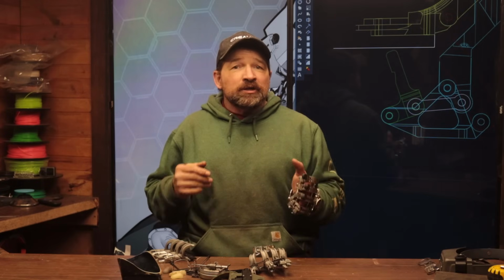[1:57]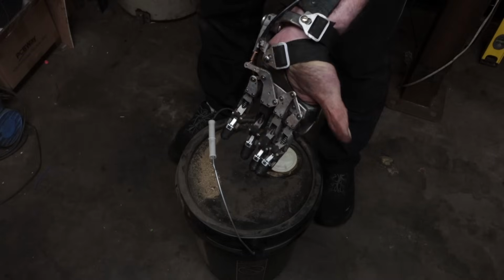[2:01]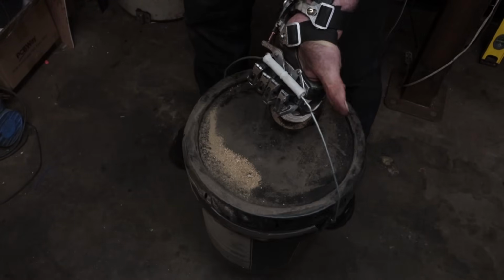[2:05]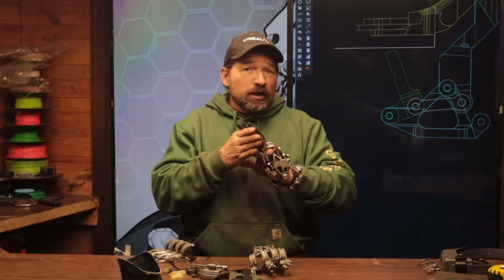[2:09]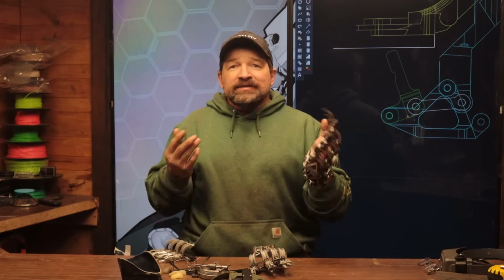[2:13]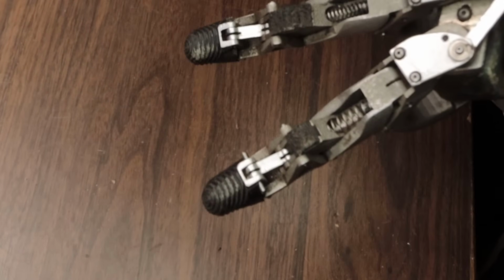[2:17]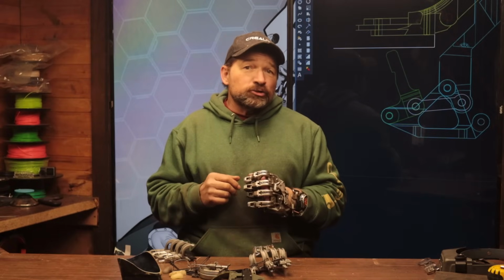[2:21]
After a bit of contemplation, I realized a novel way of getting the fingers to lock under load. The principle is to use the exterior side of the distals to carry the load instead of the palmar side of the fingers, as you would with a non-locking grip. The major advantage of this method is that, with the exception of extending the length of the link pin of the distal, no extra parts are required. The lockup is achieved with the internal geometry already in place within the finger.
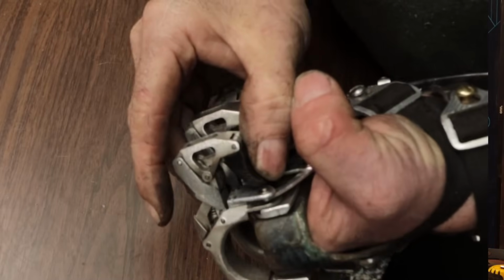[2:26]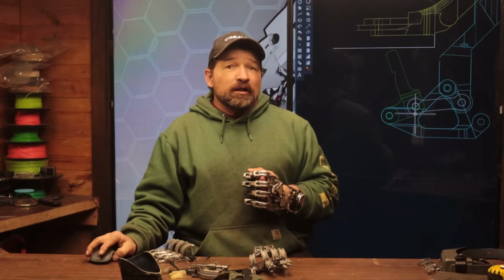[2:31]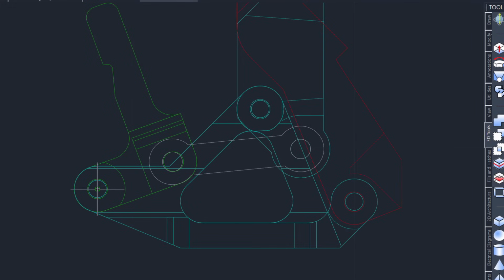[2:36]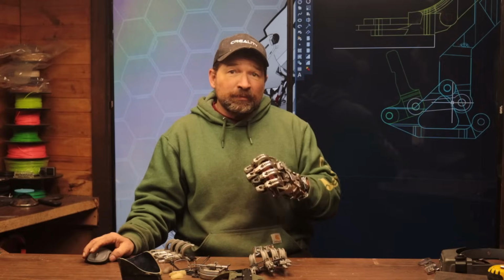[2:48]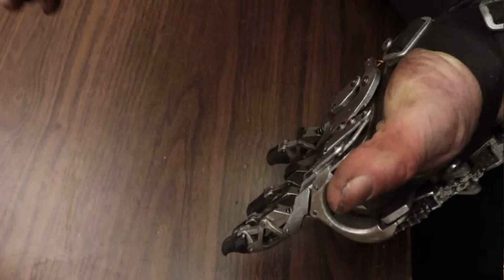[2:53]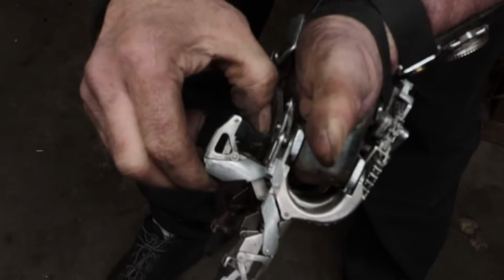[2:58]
The way the new setup works is when the finger's in its closed position, the distal pin on the distal link locks up to the body of the medial. This lockup prevents the pins of the distal link from being aligned with the hinge pins of the distal. So this pin, and this pin. As long as the 3 pins are held at least 7 degrees shy of alignment, the finger is able to return from the extended position once the load is removed. Anything less than that, and the finger isn't able to return solely from the force of the return spring.
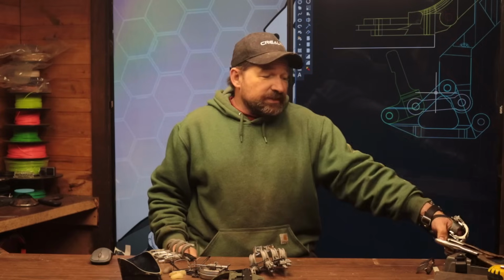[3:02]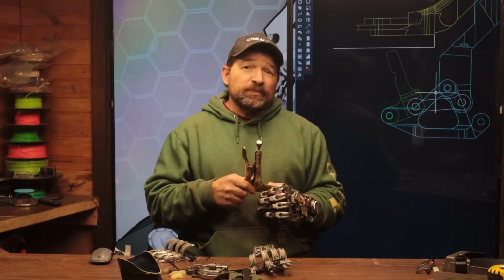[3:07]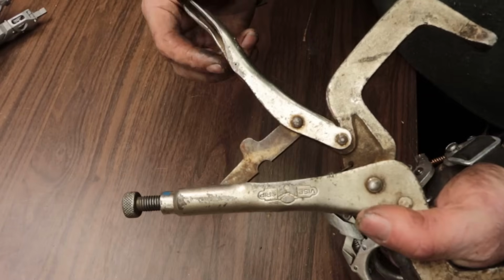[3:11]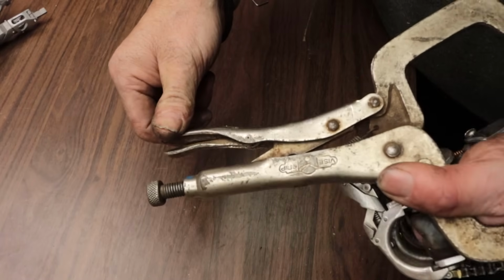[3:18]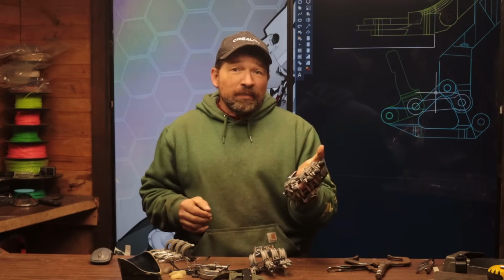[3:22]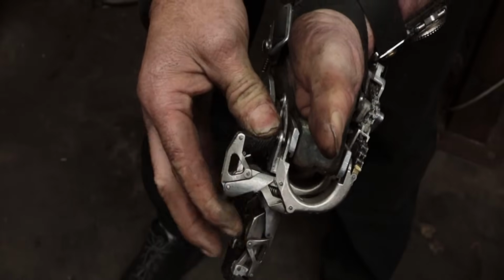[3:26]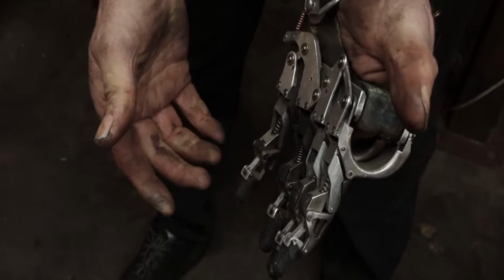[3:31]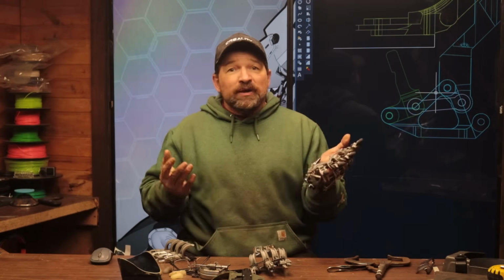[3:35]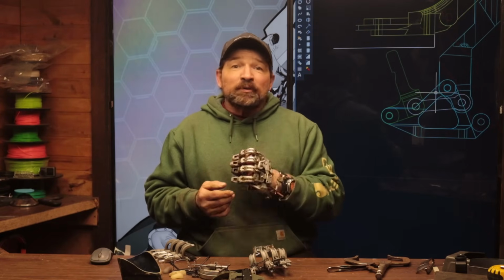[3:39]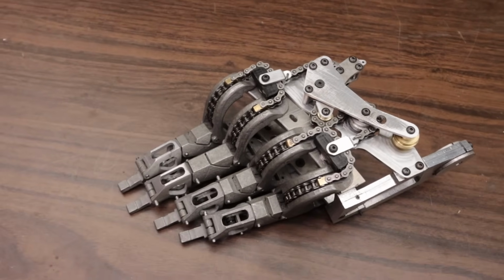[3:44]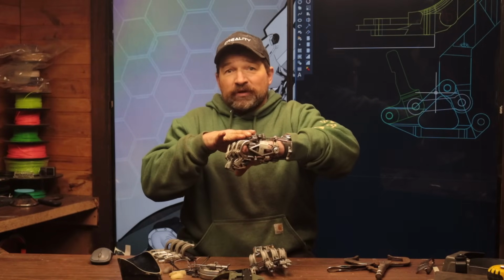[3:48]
This method is similar to how a pair of vice grips work, with the major difference being that in the case of the vice grip, once the locking linkage rotates past the alignment plane, the input force can be removed, and until the linkage is rotated back across the plane, the clamp remains locked. Whereas with my setup, the linkage is limited just shy of that plane, and a small load needs to be continuously applied to the input lever, which in this case is the distal, in order to keep the finger from backdriving. The benefit that I'm seeing by using this method to lock up the finger is it allows me to simplify the winder, decreasing not only the part count of the assembly, but also decreasing the overall height of the assembly by almost 1/4 inch.
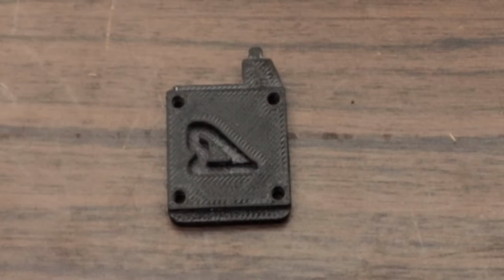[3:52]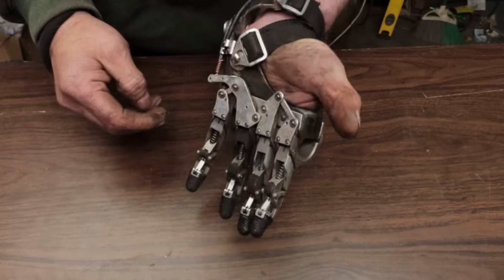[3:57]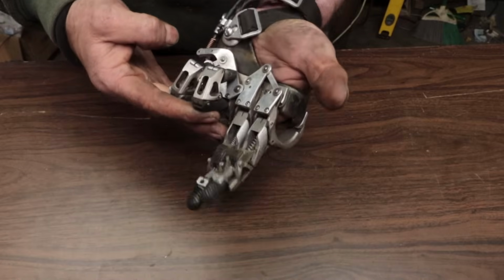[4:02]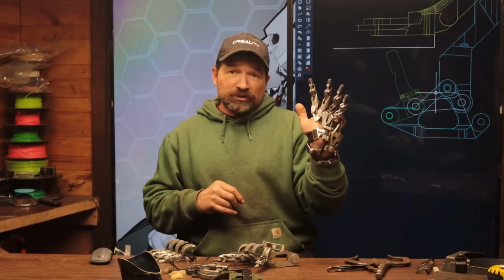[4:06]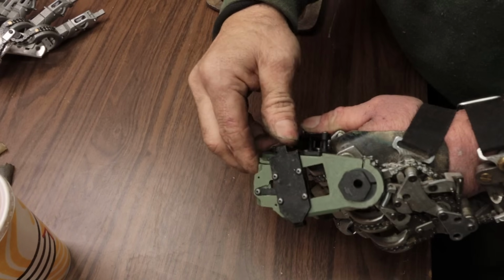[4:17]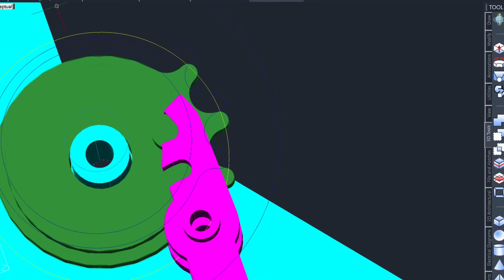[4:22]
I've also been working on a new gaffney plate that incorporates a miniature cartoid locking mechanism that, when completed, will allow the user to lock the ring and pinky in either the open or closed position by moving the hand laterally with the fingers either open or closed, opposite of the motion that would normally splay the fingers. So from 0, positive motion or abduction splays the fingers, and negative motion or adduction will click the cartoid lock, either catching or releasing the sprocket roller on the winder.
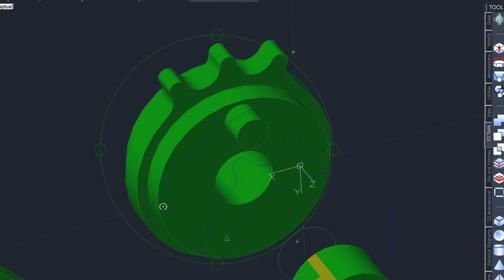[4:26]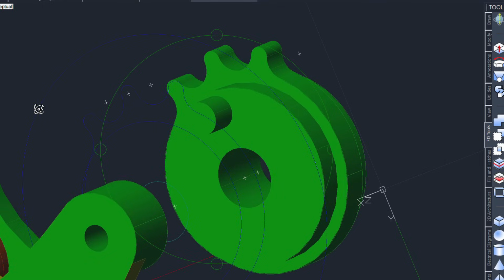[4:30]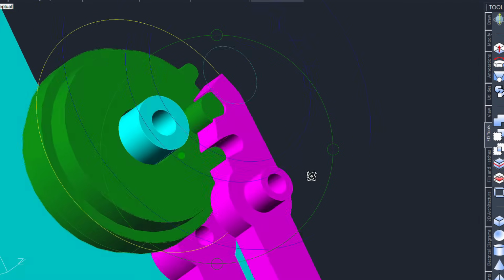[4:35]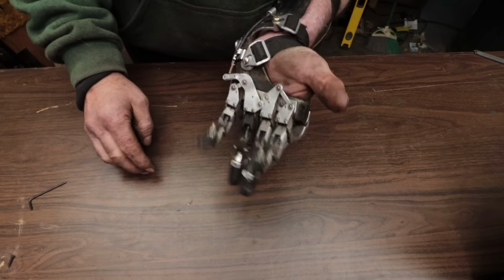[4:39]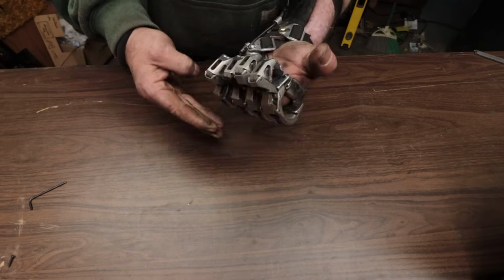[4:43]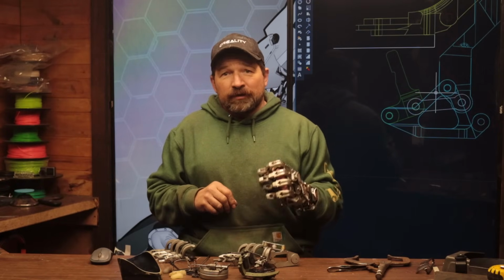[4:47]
This roller is different from the others used in the winder. It has 3 sprocket teeth that tie the winder chain to the rotation of this roller. There's a pin that protrudes on the top of the roller, and by catching the pin either before or after the locking pawl, it'll lock the ring and pinky fingers in either the extended or closed position. This is something I've been working on for a bit, and I'm sure it'll turn out to be a super useful feature once I get it dialed in.
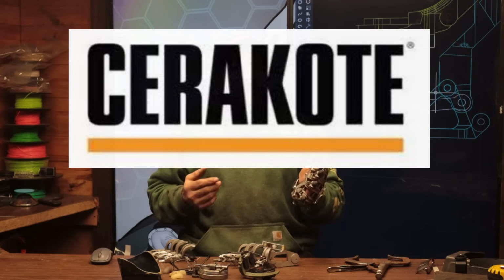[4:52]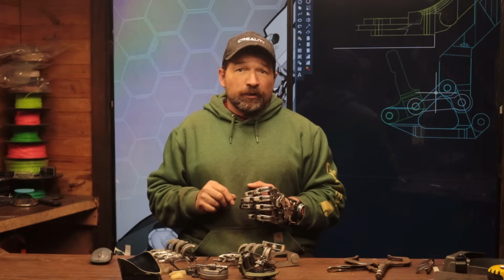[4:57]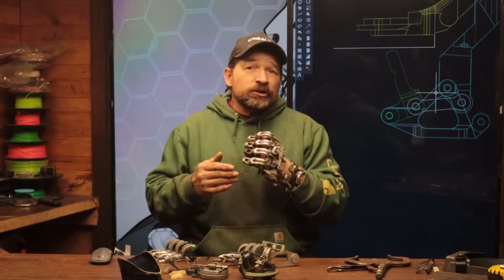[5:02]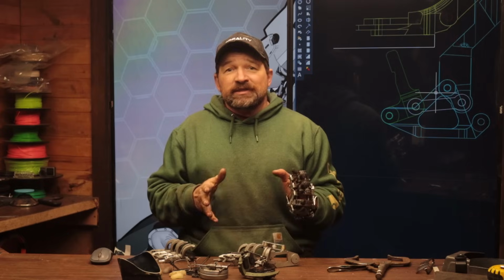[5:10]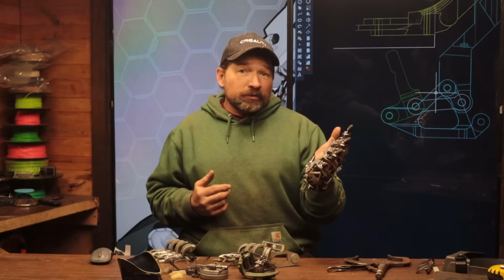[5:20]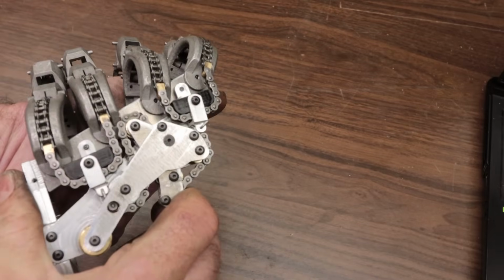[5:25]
I've also been working on putting together a thing with the company Cerakote. They produce a low-friction, corrosion-inhibiting coating that's well-known within the firearms community. The idea right now is to use their microslick coating on the hinge pins and use their oven cure coating to color the rest of the prosthetic. Cerakote is a super durable coating with great wear resistance and amazing adhesion if properly prepped and applied. This will be a great option for people that are looking for something different than the raw or polished aluminum look.
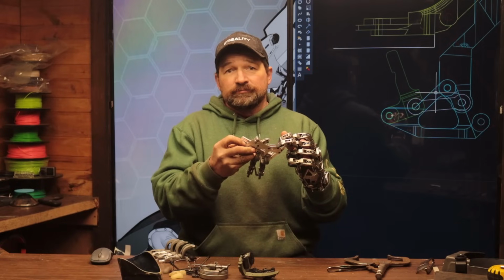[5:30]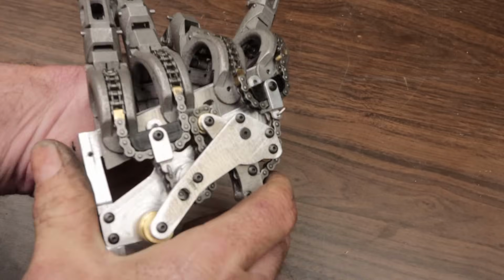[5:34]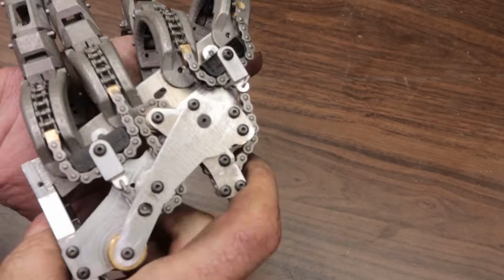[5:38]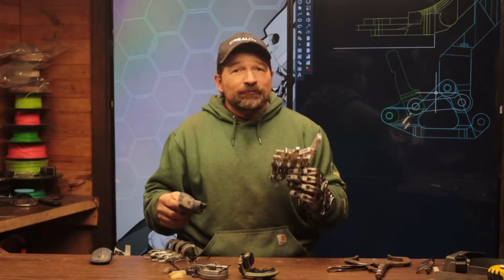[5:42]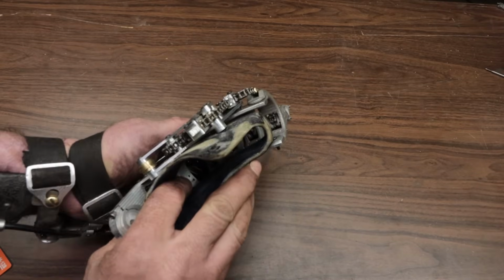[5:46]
Another thing that I've been working on is adding an interface to the base plate of the winder to the gaffney and mounting rails of the fingers. This interface makes it to where all three of the assemblies, the fingers, the winder, and the gaffney, self-align and bolt together, taking all the guesswork out of their positional relationship. This should make fitting everything to the socket a much simpler process. Basically, I'm trying to make everything kind of Lego together.
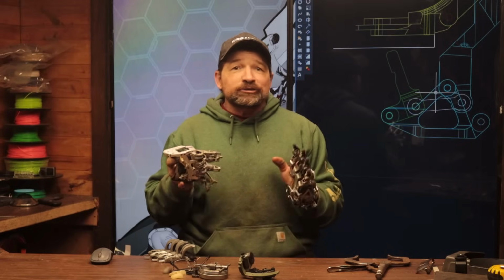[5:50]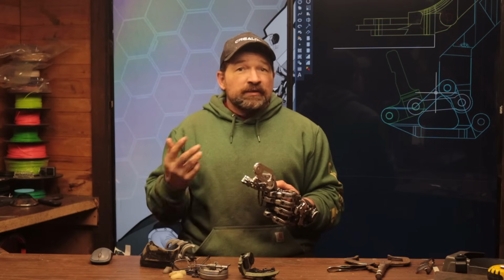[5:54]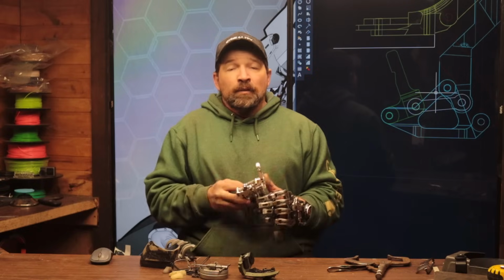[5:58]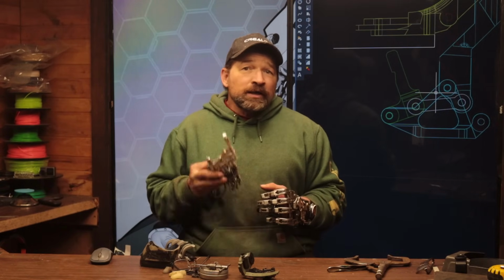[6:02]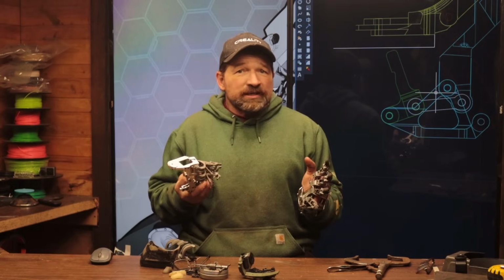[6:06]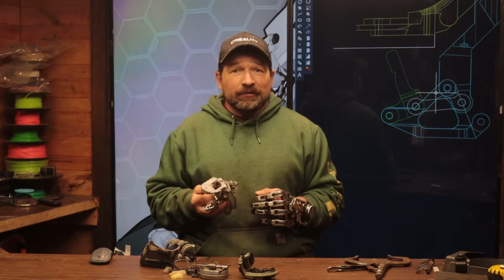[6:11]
I still need to actually prove out the new winder and gaffney assemblies, and then send the files to PCBWay and have them make first articles. Once that's done, I'll be ready to start the arduous process of looking for funding to make sure that this can be built out in the wild. If the process works out, I'll be ready to start marketing the project through PCBWay's website. This kind of lets you know where I am on the project.
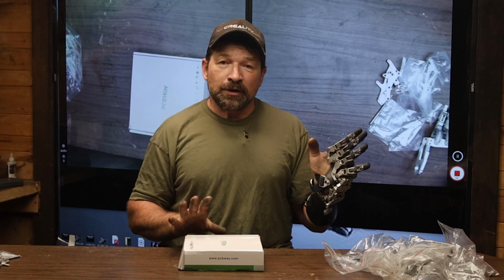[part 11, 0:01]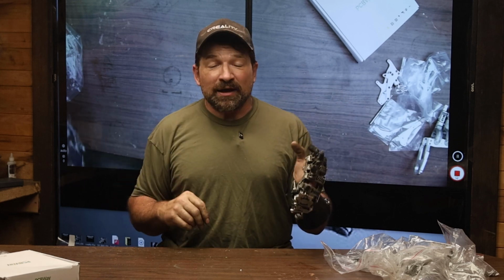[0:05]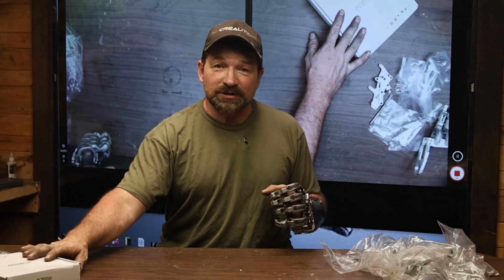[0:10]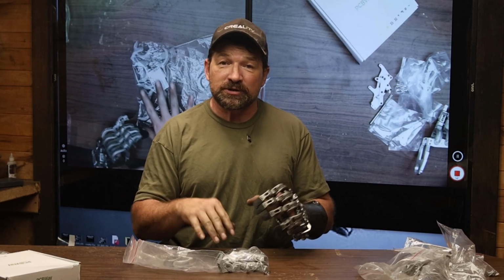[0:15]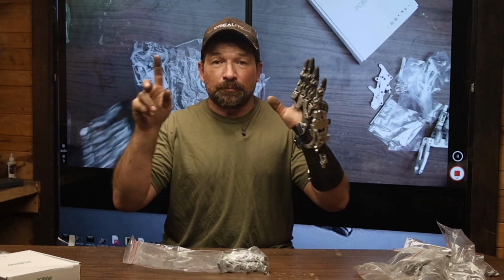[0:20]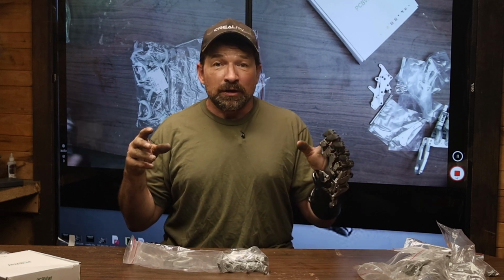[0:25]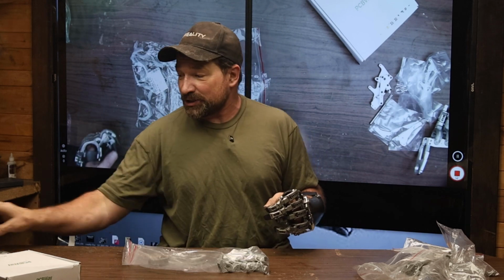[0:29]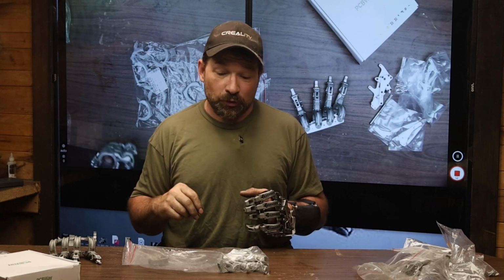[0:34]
So today's video is PCBway. When I got back from Open Sauce this last week, I had two boxes from DHL waiting for me. One box was enough printed components that I can have two setups of fingers that I can put into a little frame that shows the before and the after. So when anybody asks me, well, how much work does it really take to get from the raw condition into a finished assembled, then I'll have something as a reference to show them.
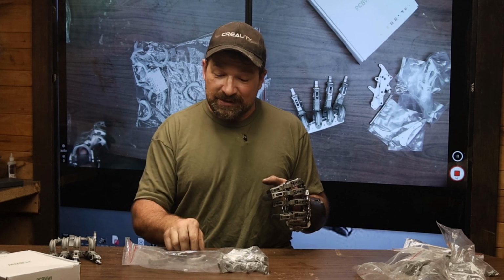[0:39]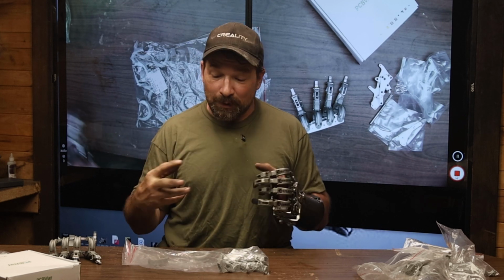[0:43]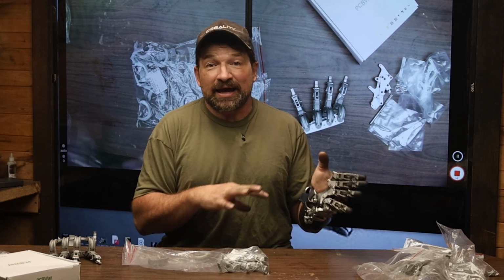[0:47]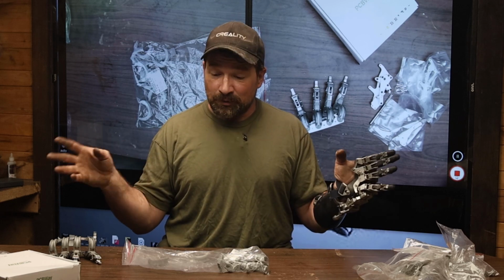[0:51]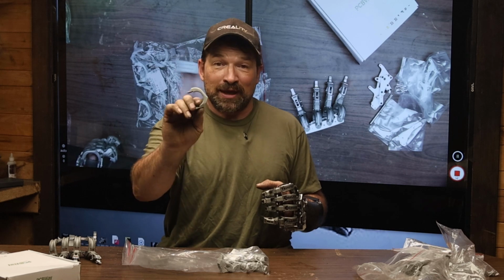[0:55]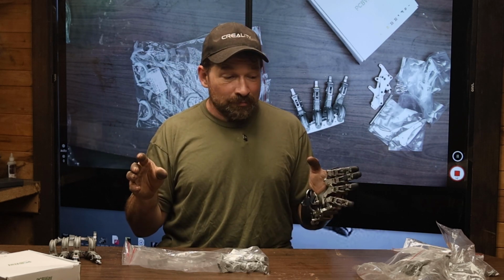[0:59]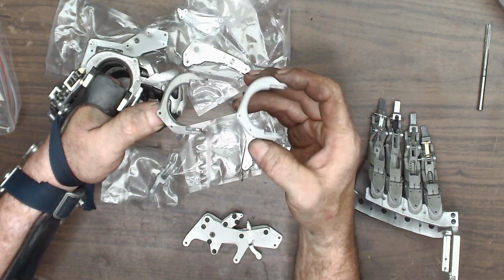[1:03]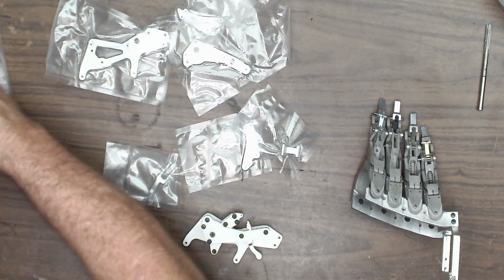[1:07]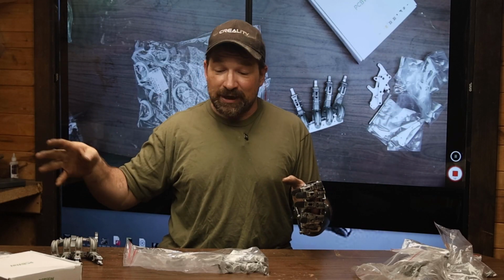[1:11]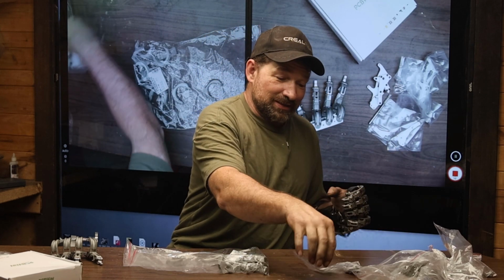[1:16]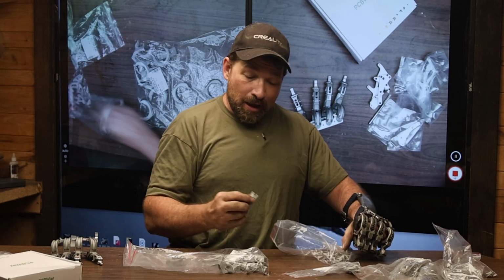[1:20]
Something that was super neat is these were all reorders of the parts. And it's been probably about 7-8 months since the last time I ordered these. And I logged into my account and was able to just click the reorder button and poof, they show up. Now, something that I expected, but super cool, is from batch to batch, they are exactly the same. So parts that you order, say, a year later, are going to come exactly in the same way that you received them the first time.
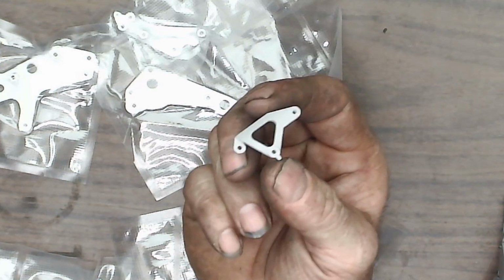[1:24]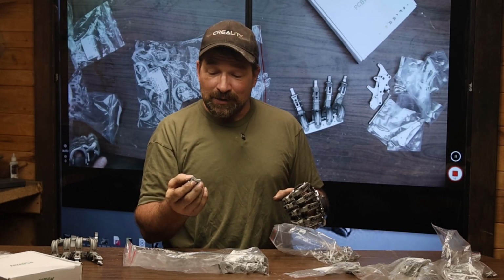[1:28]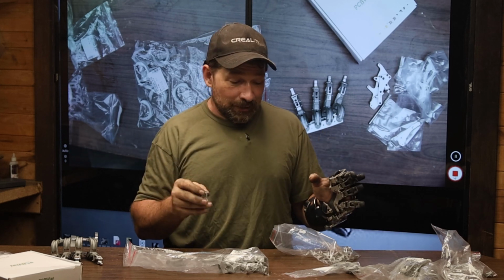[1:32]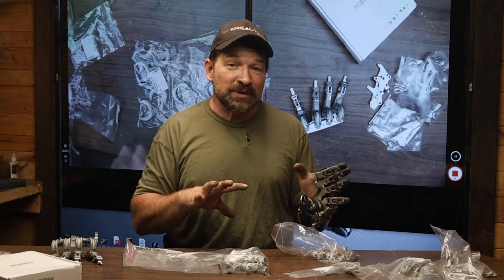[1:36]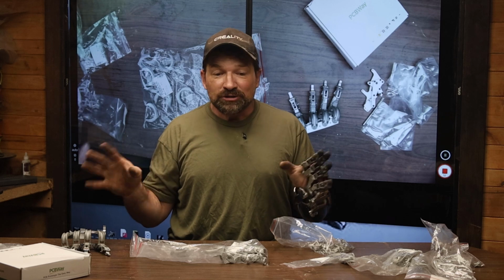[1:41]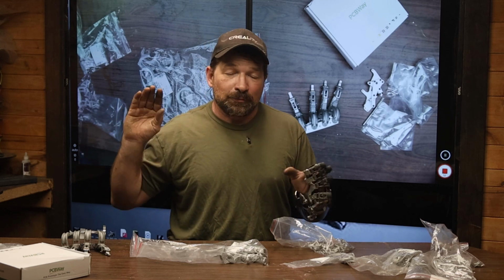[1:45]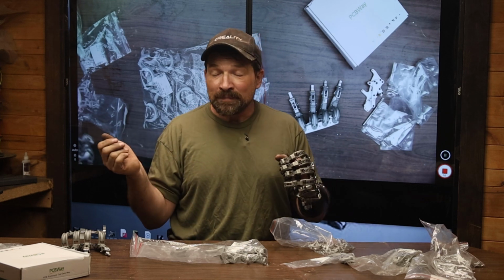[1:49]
Even ordered another set of medials. Everything on these looks just amazing. They do take a little bit of file work just to get all of the fitment, but that is totally to be expected. And since printing is not machining, I'm going to leave these parts at their current dimensions just to be safe, so that if you have something that is printed and it ends up undercutting just a little bit, then it's still a usable part and you're just filing it into tolerance.
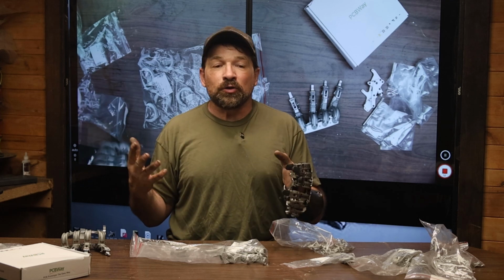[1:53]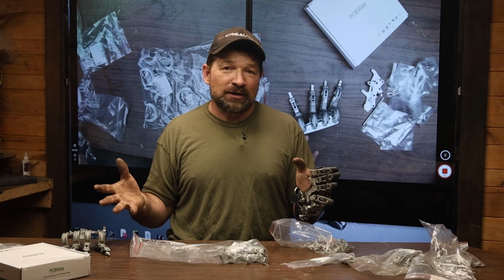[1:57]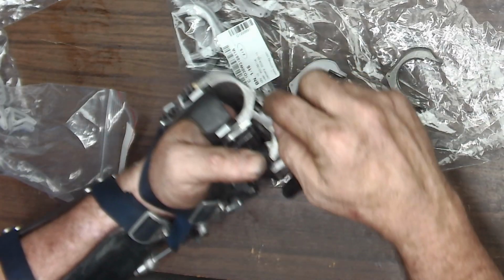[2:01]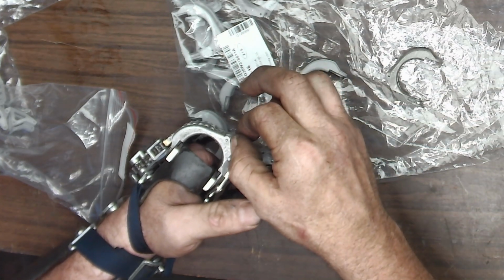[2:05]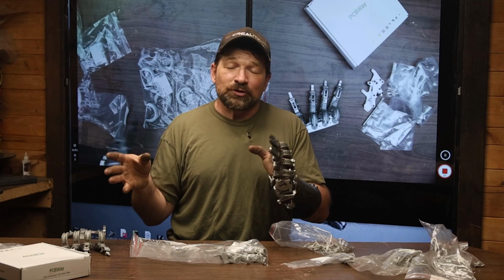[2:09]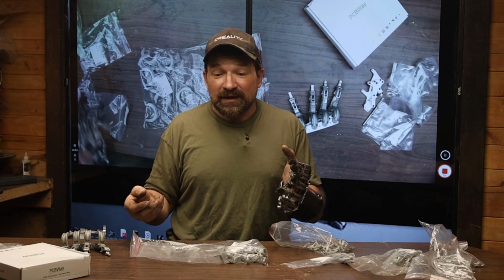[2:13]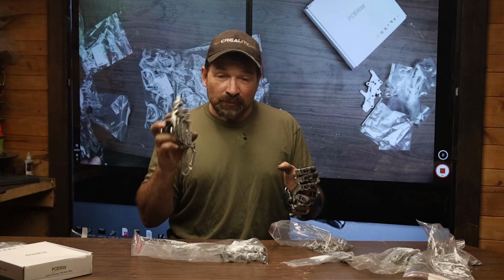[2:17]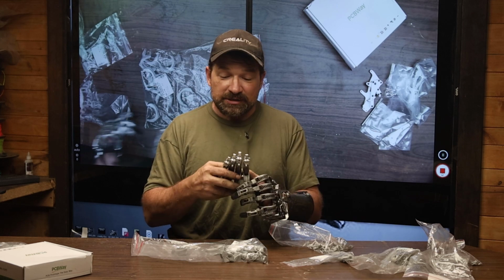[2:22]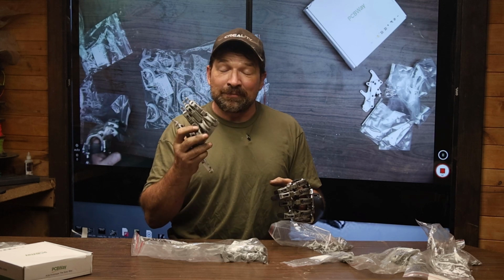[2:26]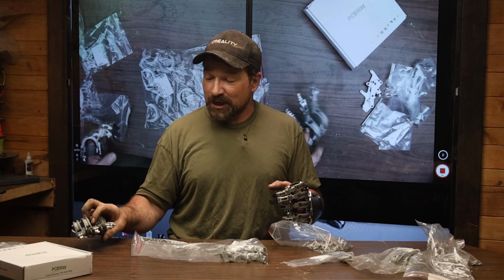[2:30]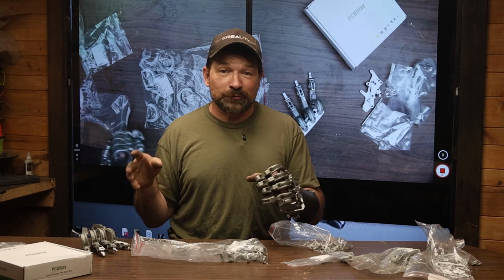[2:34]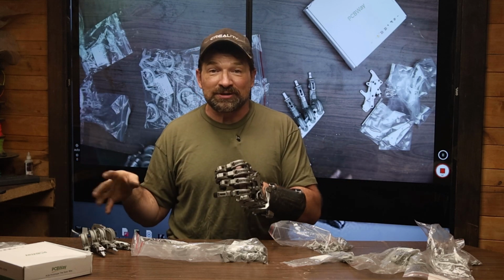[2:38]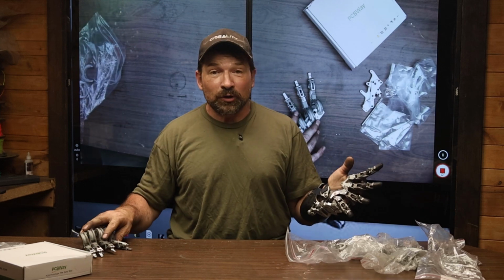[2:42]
I mean, you got to figure, on this project, you don't need Remington manufacturing and repeatability. This metacarpal base will only ever sit with this proximal one and this proximal two. So it's not that you have to go for a number particularly, you just have to go for a fit. And I think that's going to be something critical on these parts when somebody that's not a machinist is putting them together. But I tell you, I'm so excited. I really think that this project is coming to the point that in the near future somebody's going to be able to just order parts and then put themselves together a device.
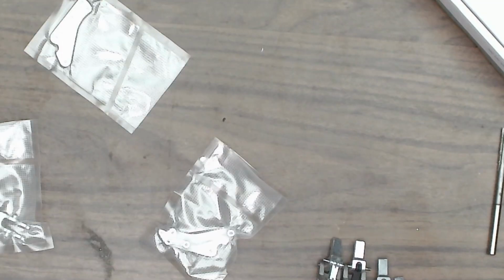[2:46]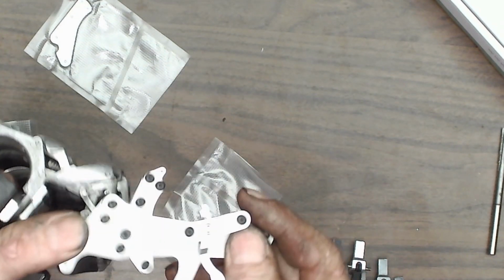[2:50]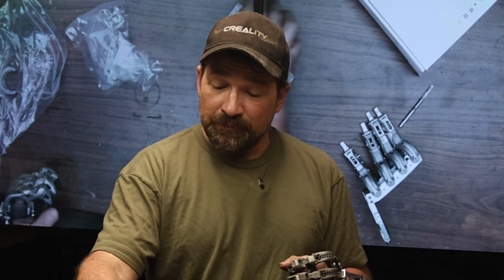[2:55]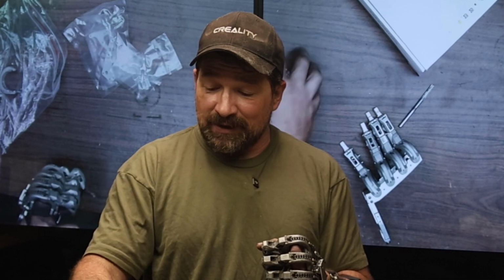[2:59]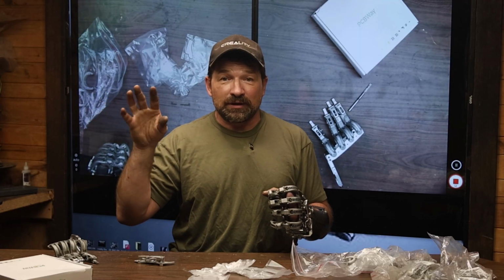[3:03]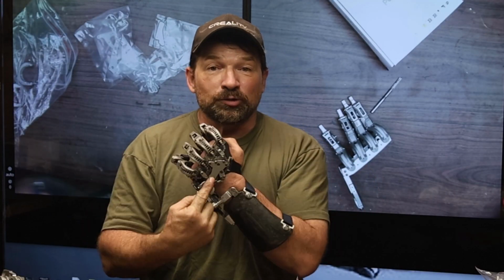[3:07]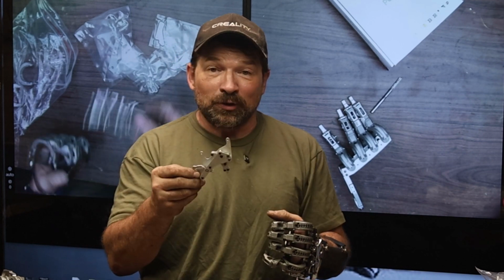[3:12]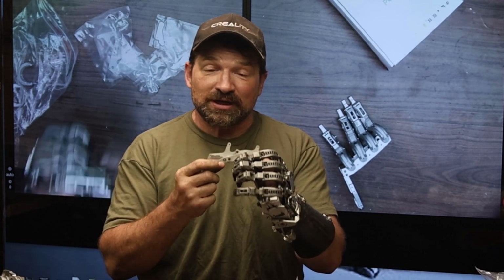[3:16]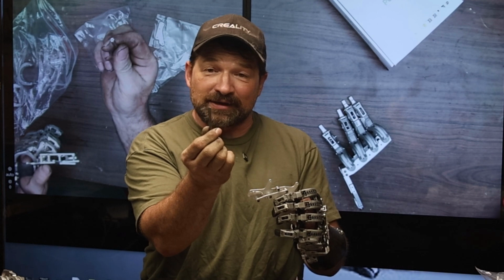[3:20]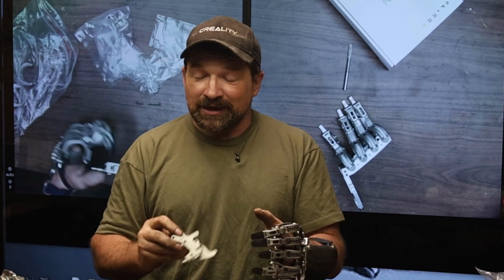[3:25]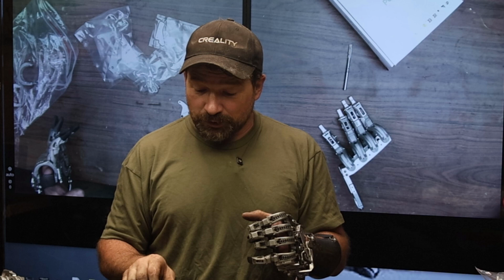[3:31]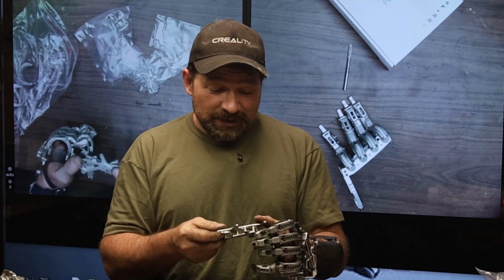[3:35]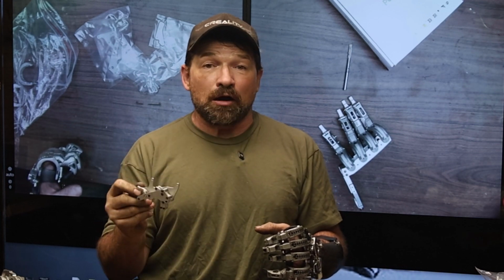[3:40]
Also within those parts, I ordered the first articles of the winder assembly. So here is a base, here is a cap, here is the swivel, the all-important fork for the grip pattern selection, and then the two parts that make up the core. Now, I'm going to be supplying the turned parts, the rollers, and then the reversing sprocket. But I have to say, the only post-processing that I had to do aside from the threading for the 4-40 bolts was I had to pass the 6mm reamer through the two holes for the bearings and just take off a little bit of the flash from when they glass bead blasted the surface of it. Other than that, everything fit perfectly. I gotta say, the machining tolerances and the finish on this stuff was just awesome.
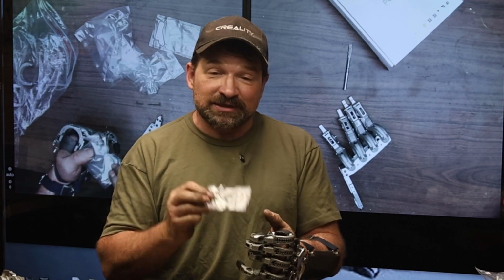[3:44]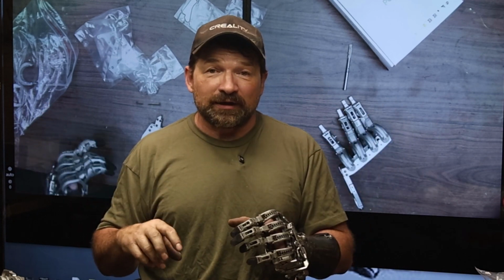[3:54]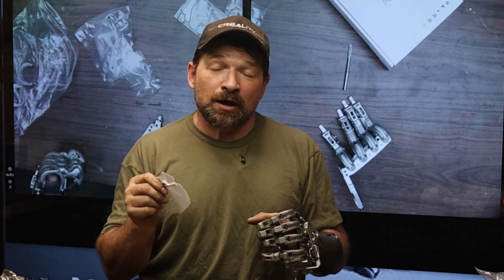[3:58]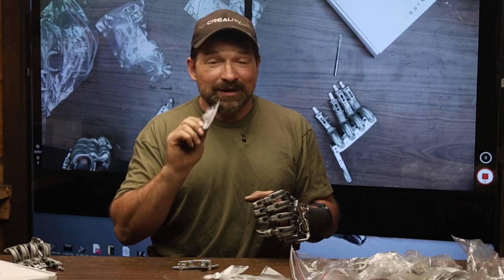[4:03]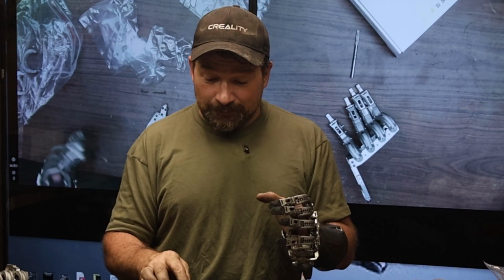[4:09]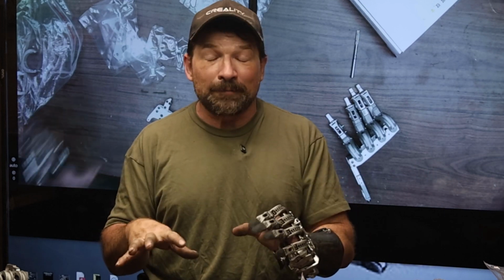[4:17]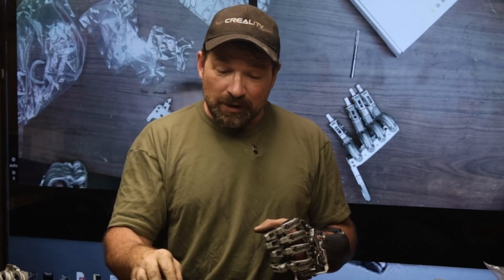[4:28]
Another neat little touch is they vacuum bag all of the parts. Something kind of cool is no longer do you have to do all of the dimensioning, like full files with all your critical dimensions. All I did for these parts is I uploaded a .step file. And I tell you, everything came out just perfect. So if you do by chance have a machine application project, maybe give them a shot. It has gotten so much simpler than what it used to be for the prep on this type of project. It's no more difficult than just uploading the STL that you would for a printed component. Just now you're doing it as a .step file.
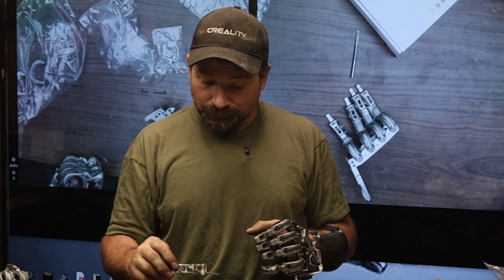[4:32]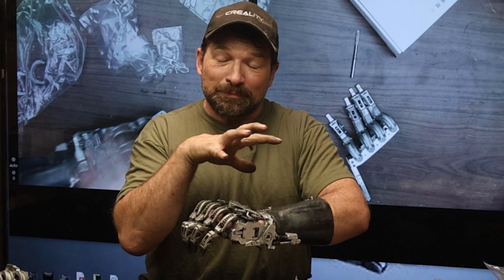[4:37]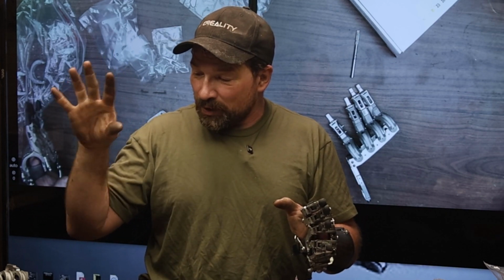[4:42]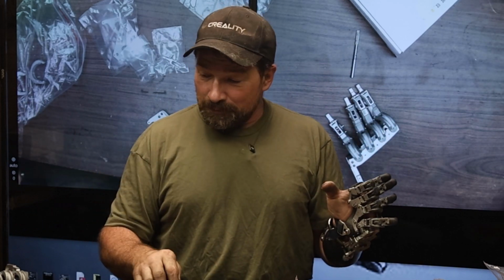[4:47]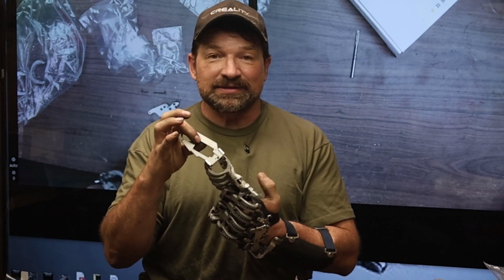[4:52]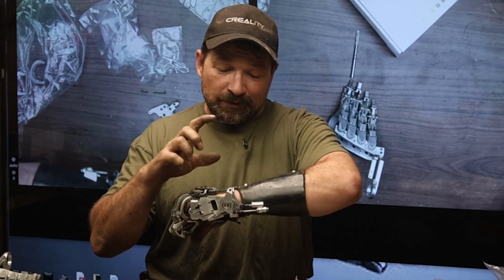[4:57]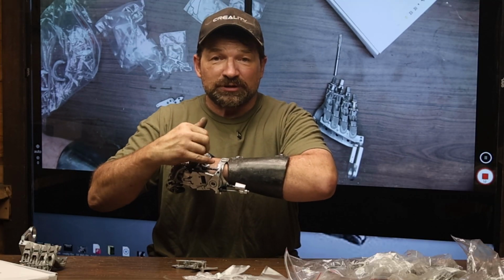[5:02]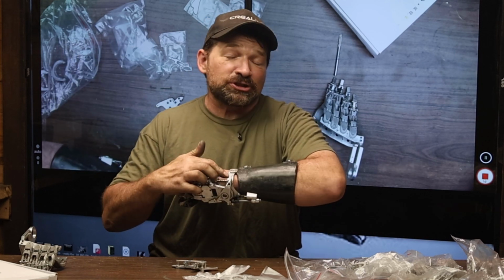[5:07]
I'll let you know how these go together. I'm going to end up building another complete set of components, and everything is going to be first articles from PCBway. So now we have fingers and winder. Next thing I'll be working on is the gaffney with the cartoid latch for the grip pattern selection, and then a redo of the gimbal. So I ended up adding a little bit more clearance for the radius and ulna bone, which has worked out pretty good, but this is a machined one.
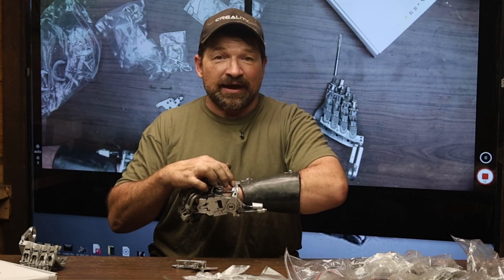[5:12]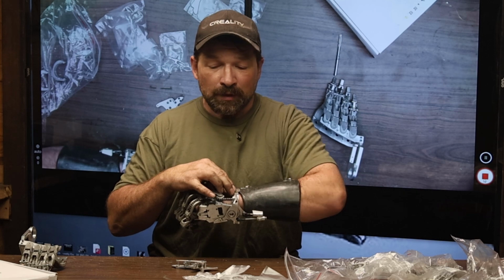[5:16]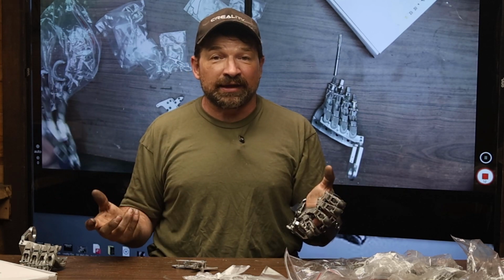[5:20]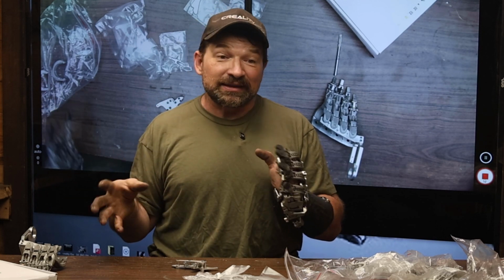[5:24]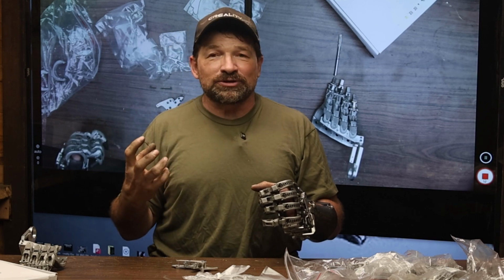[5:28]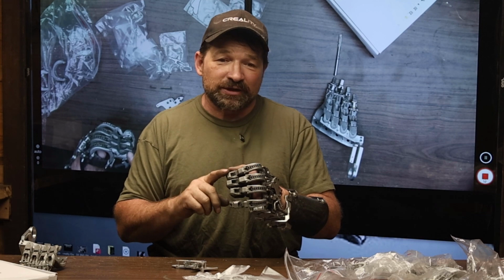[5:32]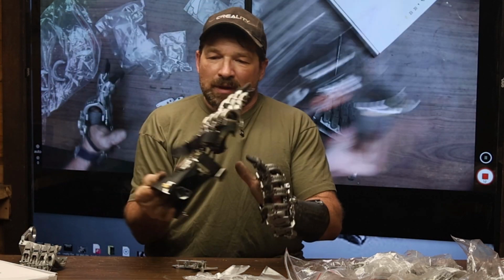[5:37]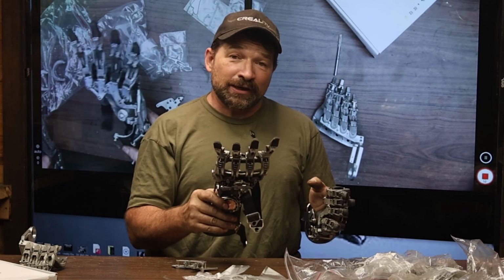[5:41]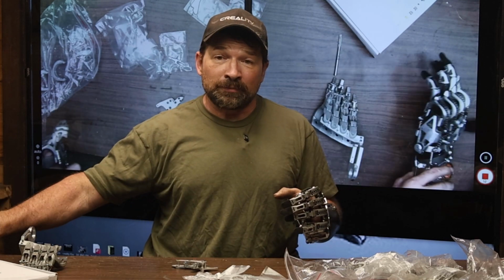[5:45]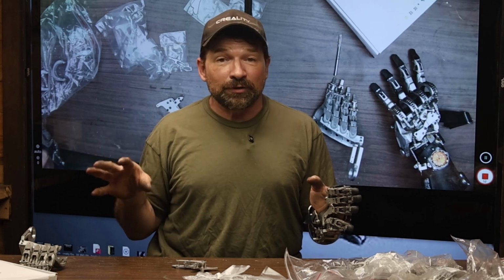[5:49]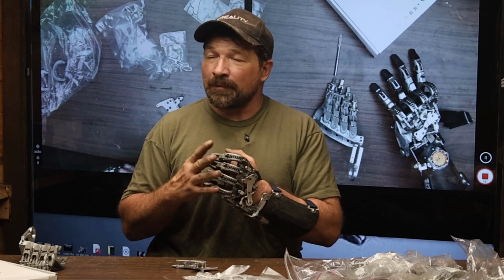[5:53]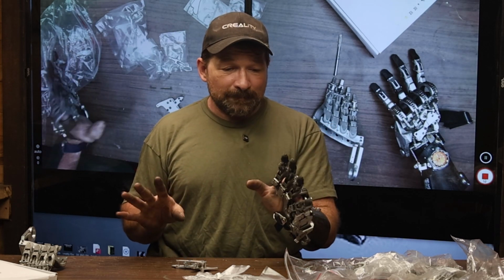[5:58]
For the kit, I'm going to end up doing these as SLS mag aluminum. I really do like the weight and the wear characteristics that I'm getting out of that as a material. You know, originally I was a little bit leery about how it was going to last with a pin boss situation. But I've been using this hand for a little over a year now, and a lot of these finger components are the mag aluminum. I haven't had any problem with the material wearing. And I only have about a month and a half on this hand, and so far, it's great.
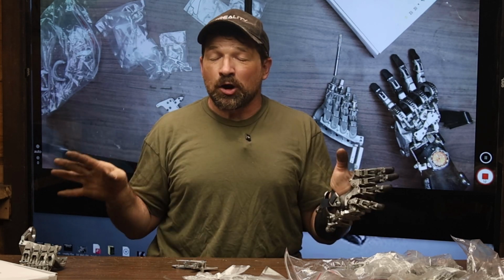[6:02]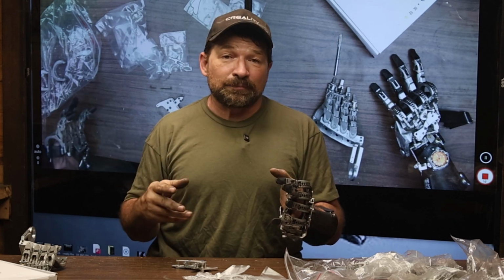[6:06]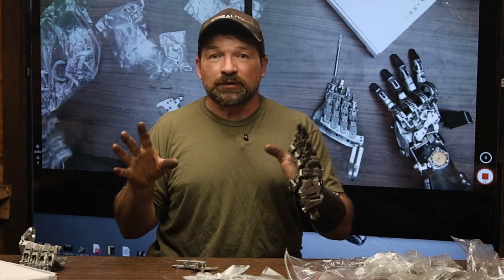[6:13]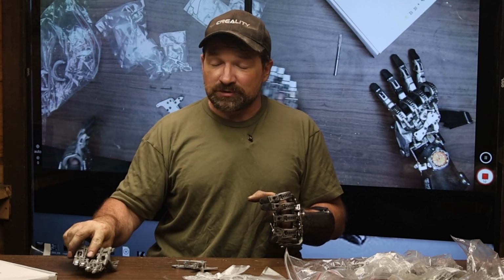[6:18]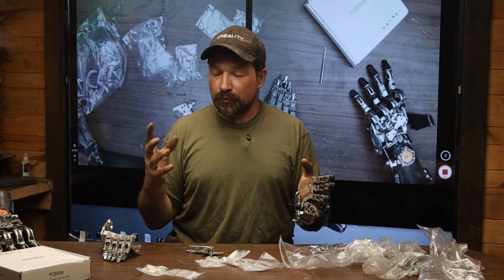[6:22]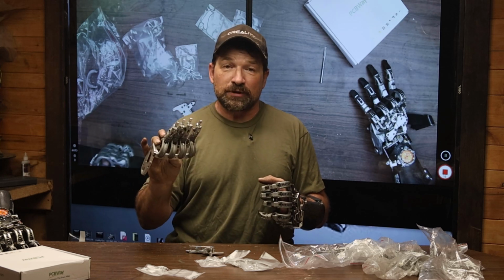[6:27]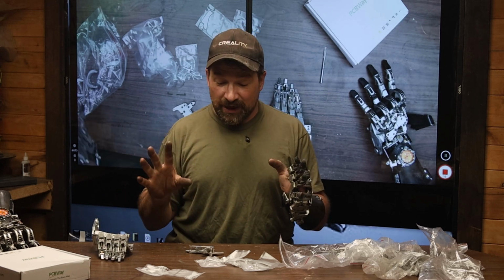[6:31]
And I haven't done any clear coating, Cerakoting, any hard anodizing or anything. I do have it set up so that in the future, probably after Rapid and I finish doing all of my maker fairs and stuff, I'll send out this set of fingers to Cerakote to have them colored. They have a product called MicroSlick. It's an anti-friction coating that I'll try having them put on the wear points of those fingers. We'll see how that goes.
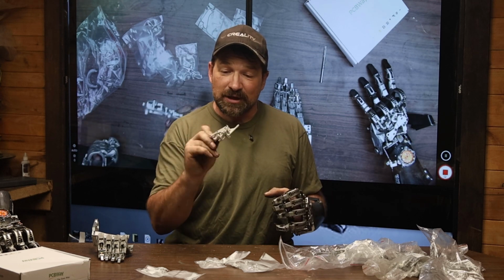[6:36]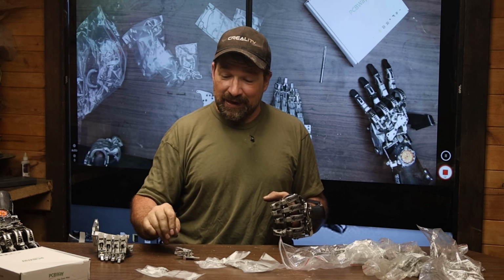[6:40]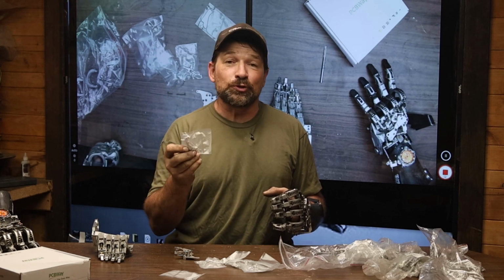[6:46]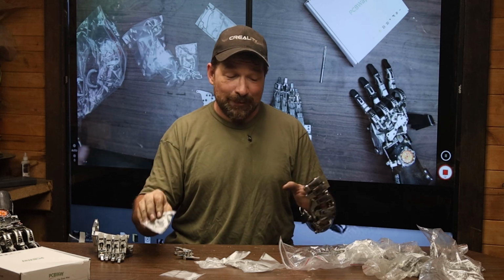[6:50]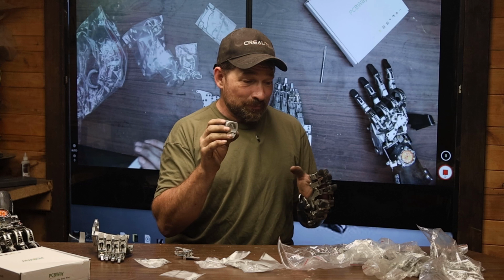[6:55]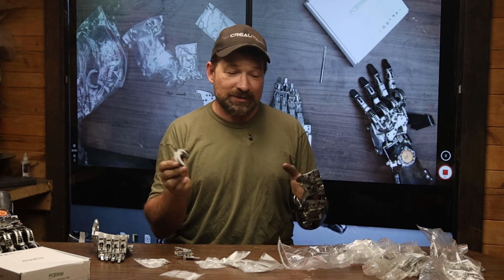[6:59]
So the big news of this video was the machine components came back just perfect. And I gotta say, for just a .step file, the process is super easy. Definitely give them a shot if you have this type of thing. And printing from one set to the other, the mag aluminum is just awesome.
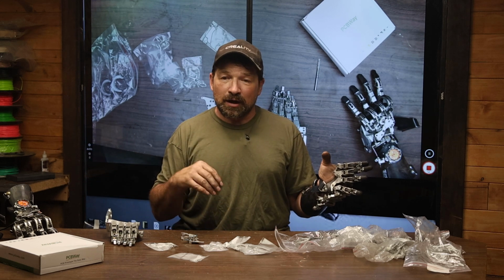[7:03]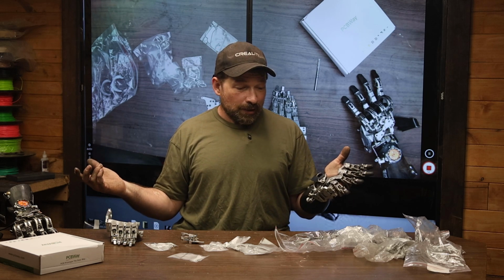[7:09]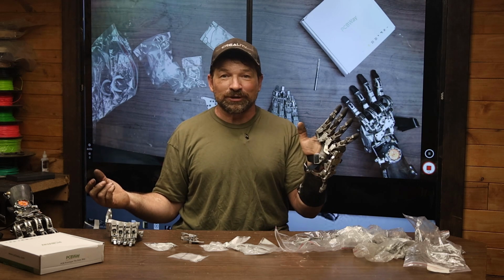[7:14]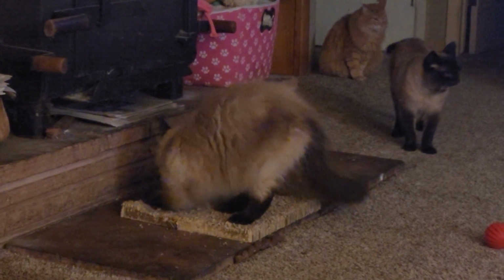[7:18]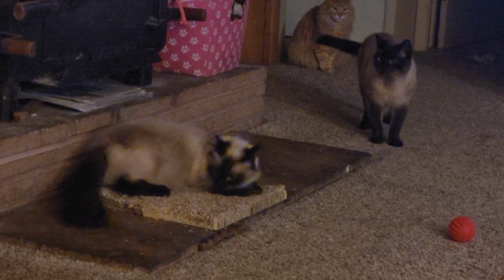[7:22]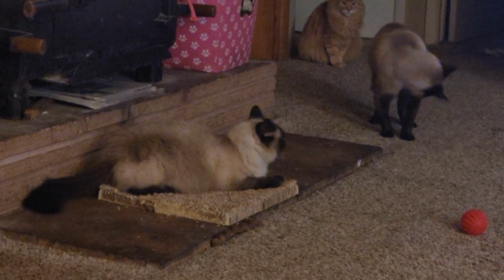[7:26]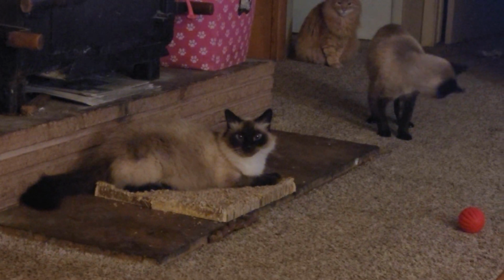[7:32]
Gonna get it some more.